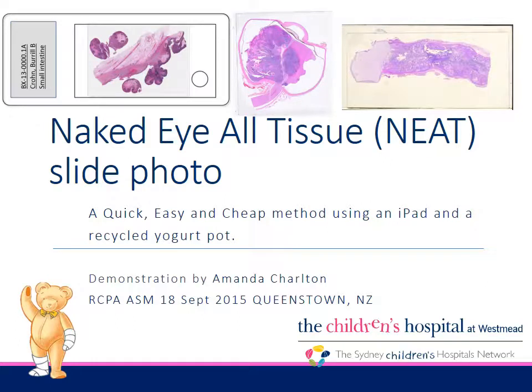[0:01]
Naked eye, all tissue, neat slide photo. A quick, easy and cheap method using an iPad and a recycled yogurt pot. Presented by Amanda Charlton at the RCPA ASM on the 18th of September 2015 in Queenstown, New Zealand.
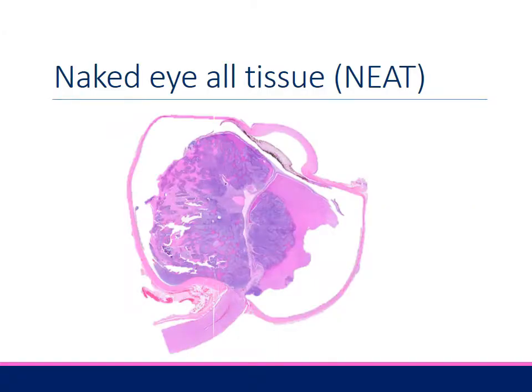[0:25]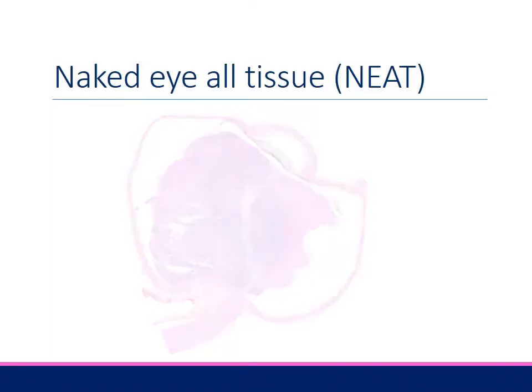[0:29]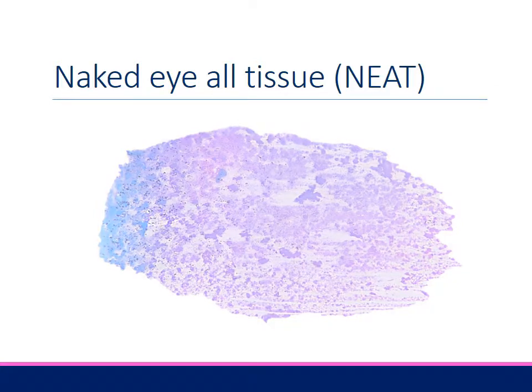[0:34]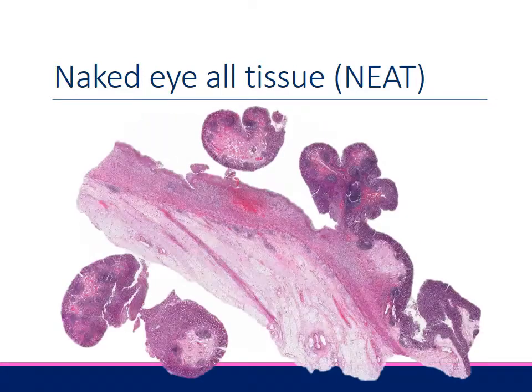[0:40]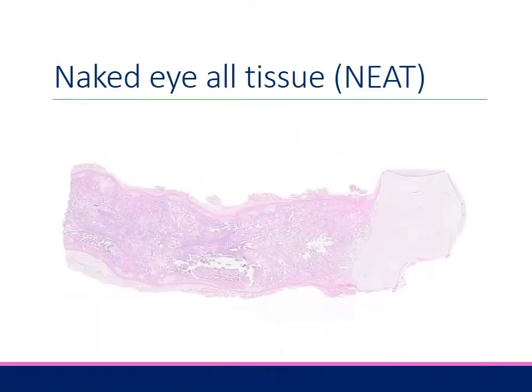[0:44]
The naked eye all-tissue image visually links the macroscopic specimen photo and the microscopic histology. We all know the naked eye image contains information about cell density, architecture, margins, and orientation. The missing link is how to capture this naked eye image.
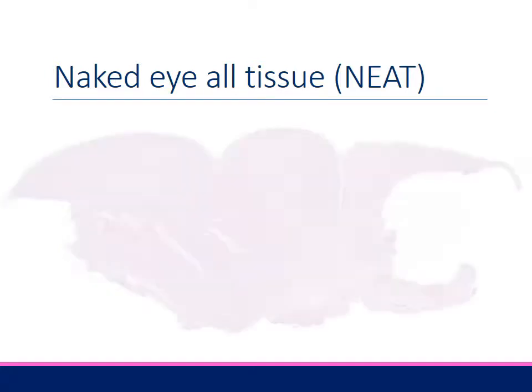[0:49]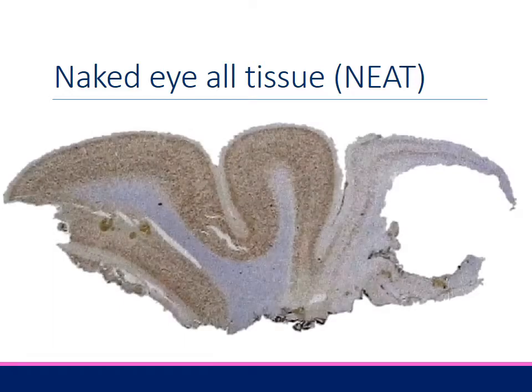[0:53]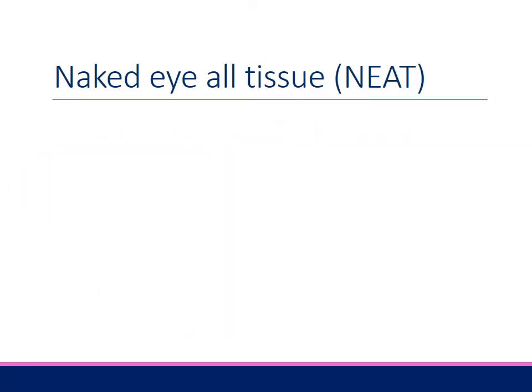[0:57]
The field of view on a microscope-mounted camera is not wide enough. The trick to get the wide field to capture all of the tissue on the slide is to use a regular compact digital camera with backlighting. Let's get started.
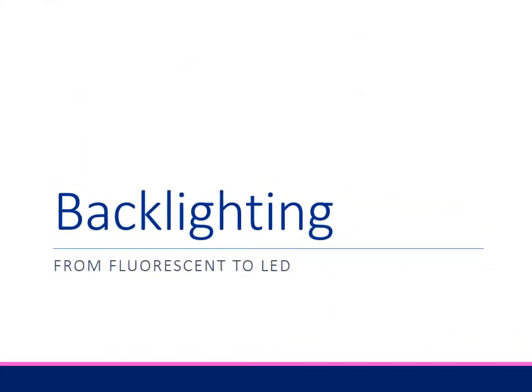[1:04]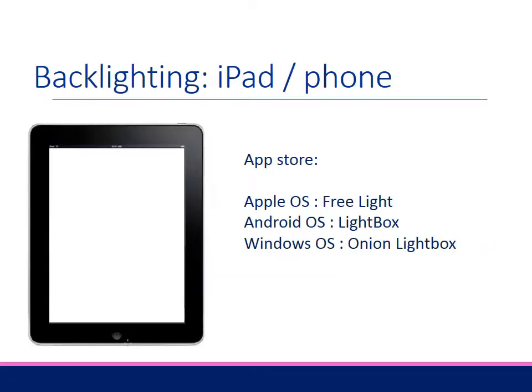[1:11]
We harness the power of modern LED screens. You already have a light box in your pocket or bag. It is your phone or iPad or tablet. Use an app to make the screen a continuous bright white light. I've put links to these apps on a wiki page. The web address is at the end of the presentation and in the URLs in the window below this video to share with you.
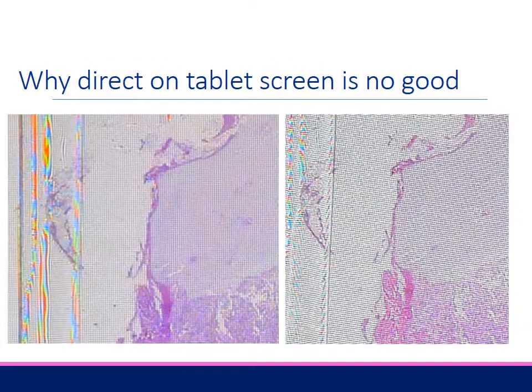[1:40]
You will be thinking, why don't I put the slide directly on the tablet screen? I have tried this and the results are not good, because the tissue is virtually in the same plane as the pixels that make up the screen. The photograph now includes the actual pixel grid that make up the tablet screen. There are two problems with photographing the pixel grid. The most obvious is the grid, which looks like a fly screen mesh or stretched out pantyhose under the slide.
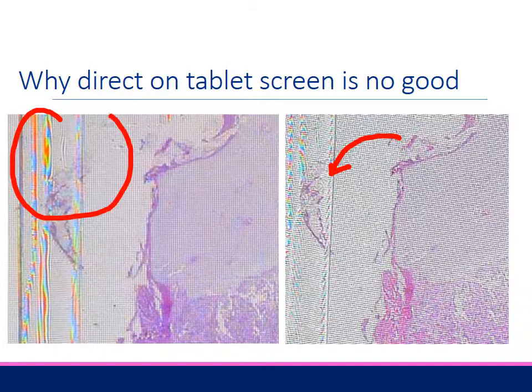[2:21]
On the right, I've rotated the slide on the screen so the grid is diagonal. The second problem is Moire pattern, a rainbow or zebra effect, seen here at the interface of the cover slip. Moire pattern is a visual effect created when two nearly identical patterns are overlaid. In this case, the pixel grid and the linear elements of the cover slip. Avoidance of the moire effect is why TV presenters don't wear houndstooth jackets on screen.
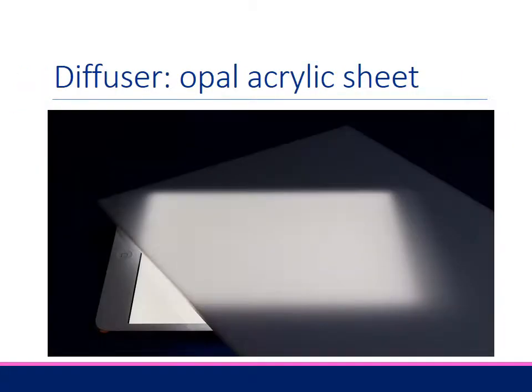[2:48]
The solution is a diffuser to obscure the pixel grid. I've tried different diffusers such as tracing paper, white photocopy paper, but I've found paper has fibers which are also captured in the photo, so paper is no good. The solution is taken from the original light boxes. They all have a diffuser panel between the light source and the subject.
You could recycle the plastic diffuser panel from the front of an old X-ray viewing box. The technical name for this X-ray viewing box diffuser panel is acrylic sheet in opal color. You can buy these cut to size online on eBay and from plastic suppliers. I got a pack of 5 A4 sized opal sheets for $20 delivered. This is a nice firm surface to place your slide on.
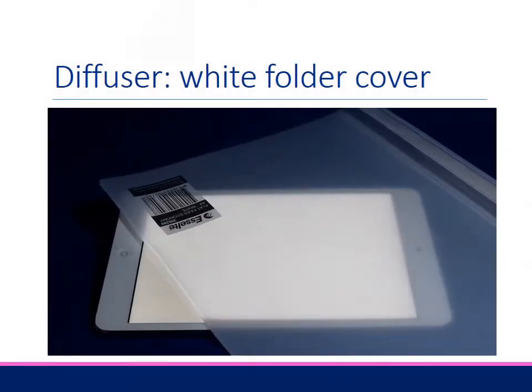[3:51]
Even cheaper and easier is a semi-translucent white plastic or polypropylene file cover, costing less than $1 from Officeworks. Two conditions have to be met in order for this to work. Firstly, it has to be white, not clear, in order to diffuse the pixel grid. Secondly, it has to have a very smooth surface because any bumpy texture will also be captured in the photograph. In an emergency, a white plastic kitchen tidy shopping bag or supermarket shopping bag could do, but they tend to be quite wrinkly and the wrinkles will be captured in your photograph.
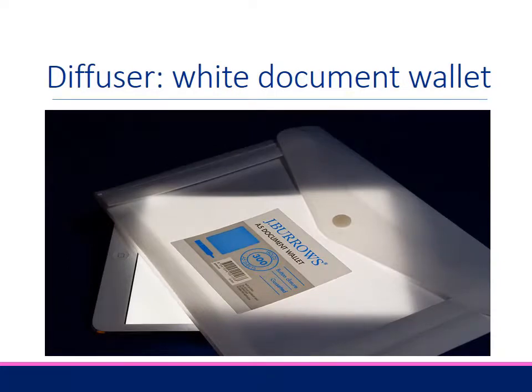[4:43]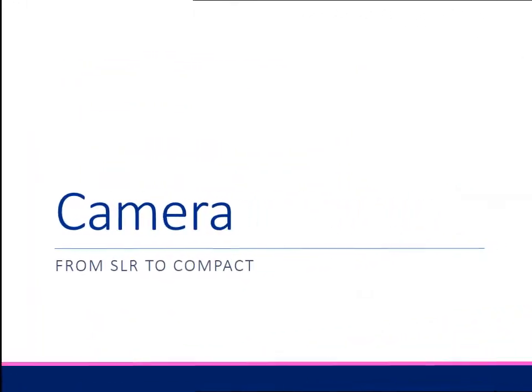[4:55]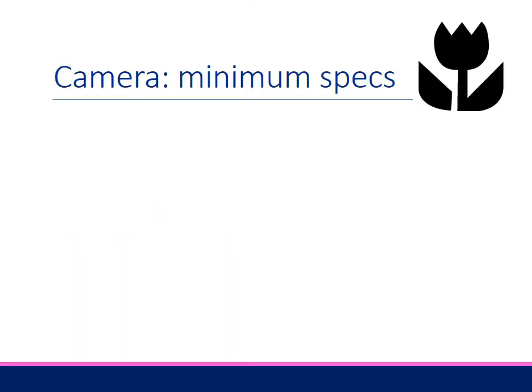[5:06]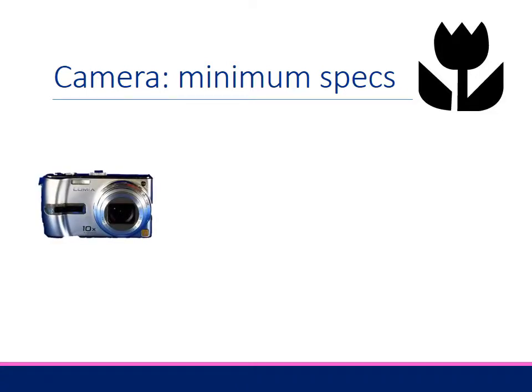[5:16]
Plastic document wallets tend to be made of stiffer material. They work well too, and you can cut the plastic to neatly fit your light box. You don't need an expensive SLR camera. The idea is to use what you already have, and most people have some sort of compact camera. Any compact digital camera with macro mode and a minimum focus distance of about 5 cm or less will do.
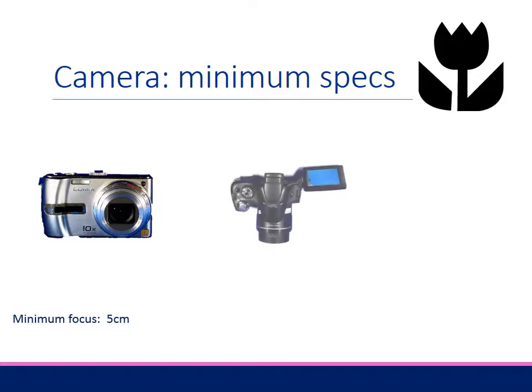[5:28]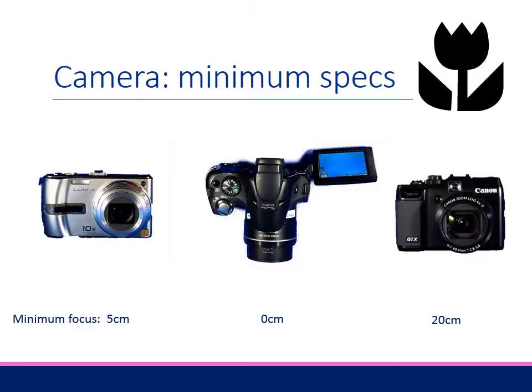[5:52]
This is an old point-and-shoot Panasonic Lumix I found in my gadget junk drawer. It's about 8 years old. On macro mode, the minimum focus distance is 5 cm. Perfect. This is a super zoom fixed lens Canon SX30 from 2010. The macro minimum focus distance is 0 cm. Perfect. On the right is a micro 4/3 fixed lens Canon G1X from 2012, but the minimum focus distance is 20 cm. This is not suitable for the method I will demonstrate.
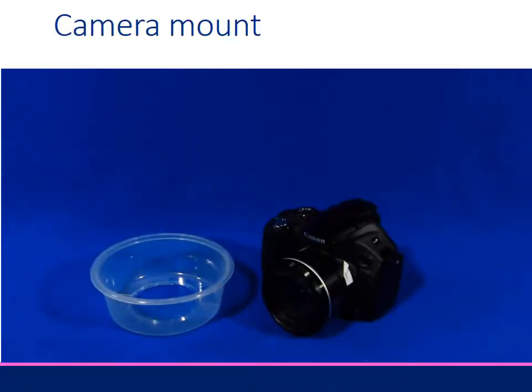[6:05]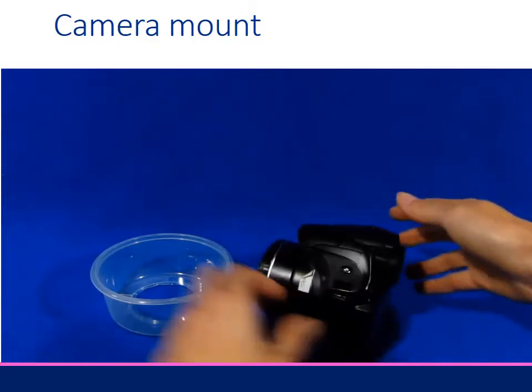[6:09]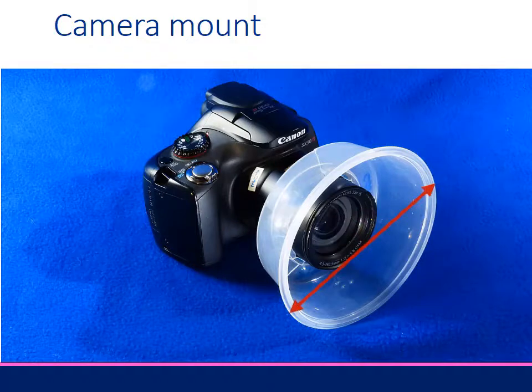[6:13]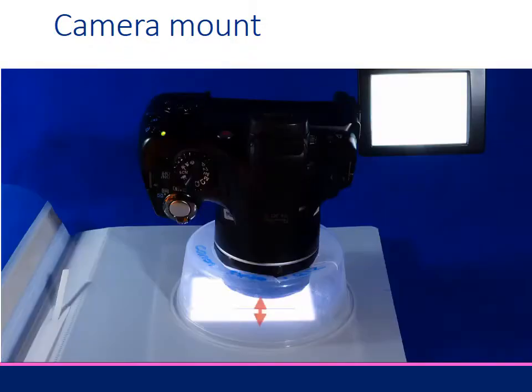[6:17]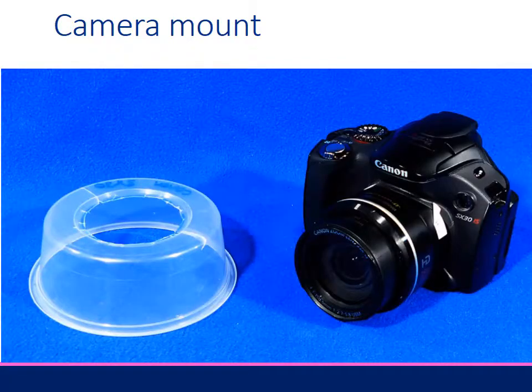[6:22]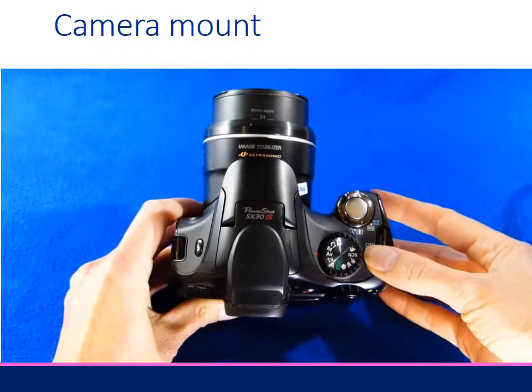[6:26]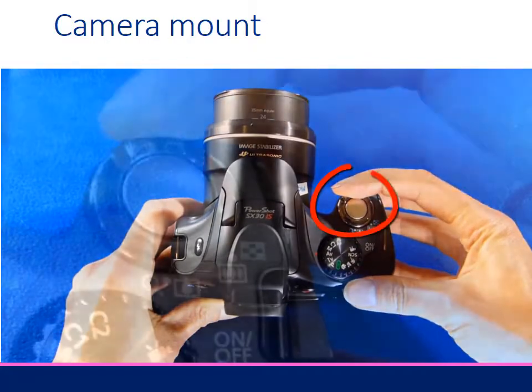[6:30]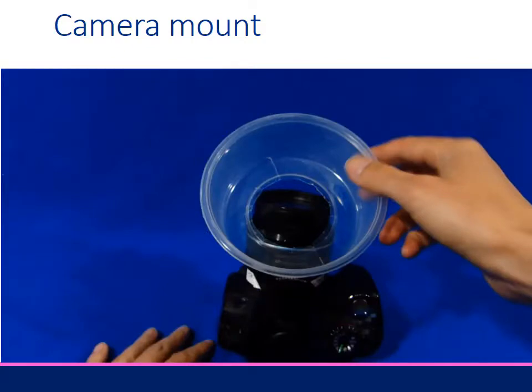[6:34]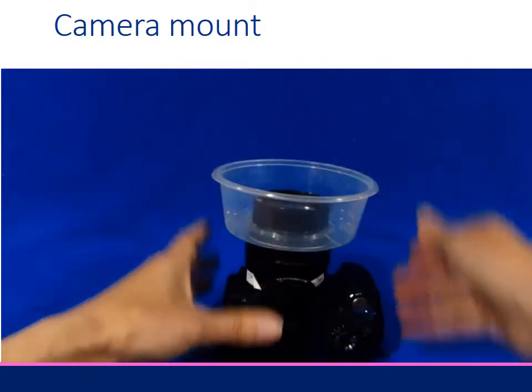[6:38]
So how do we hold the camera stationary but within a few centimeters of the trans-illuminated slide? The camera mount is a plastic food container. I think this one contained olives. The container must be wide enough to support your camera and shallow enough to position the lens at the minimum focus distance from the light box. I've already cut a hole in the base. To get the correct diameter hole, turn the camera so the lens extends and push the zoom toggle to wide or 3 trees. The cut hole in the base should fit snugly when the lens is in the wide position.
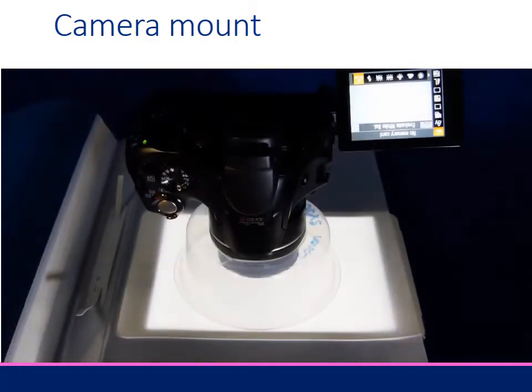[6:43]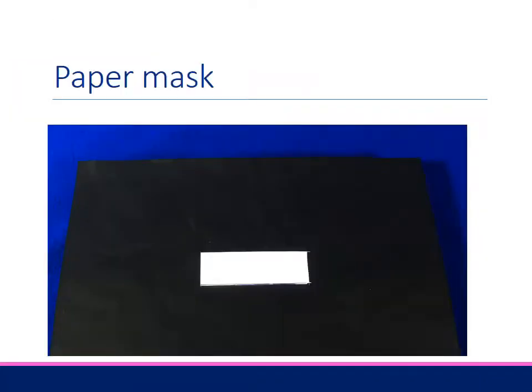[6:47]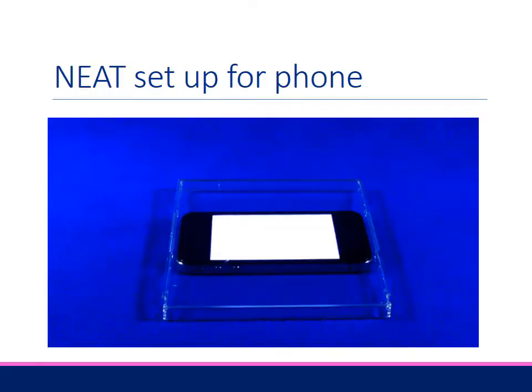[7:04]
The setup is light box, diffuser and mounted camera. I use a black paper or cardboard mask with a rectangular hole the size of a slide to reduce extraneous light entering the camera. I place this on top of the diffuser, which is placed on top of the tablet. If you are using a phone instead of a tablet, the size of the phone surface is too small to balance the broad base of the recycled food container on. To make a stable wide surface, put a hard clear plastic surface such as an old CD cover over the phone before the diffuser and the mask.
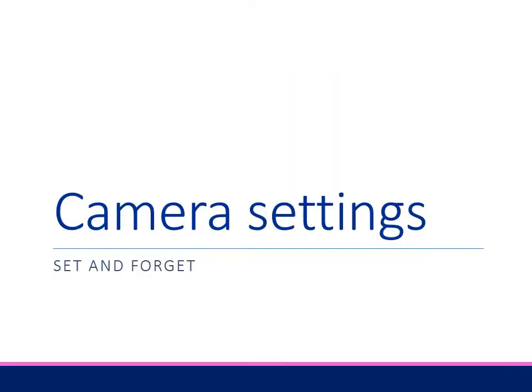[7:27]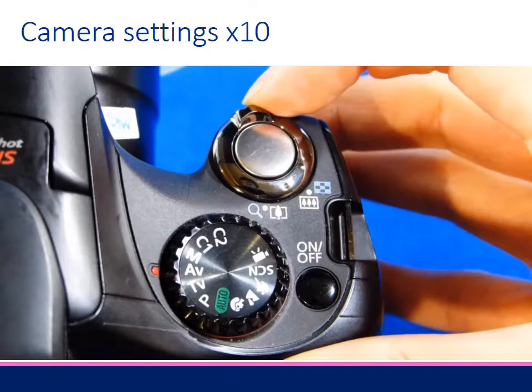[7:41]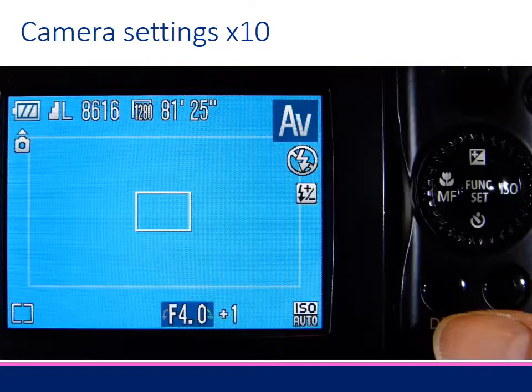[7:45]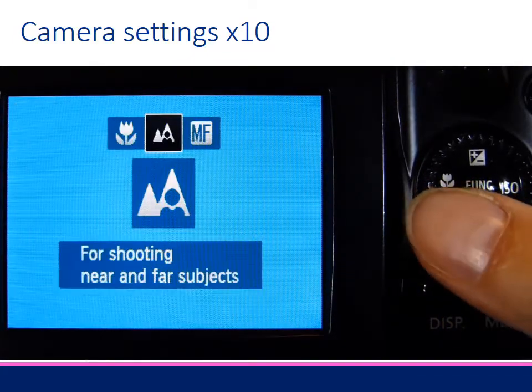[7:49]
There are about 10 camera settings you need in order to get optimal results. The good news is, once you've set up the camera, you don't need to change the settings again. Set the zoom toggle to wide or 3 trees. Select the macro or close-up mode, which is the flower icon.
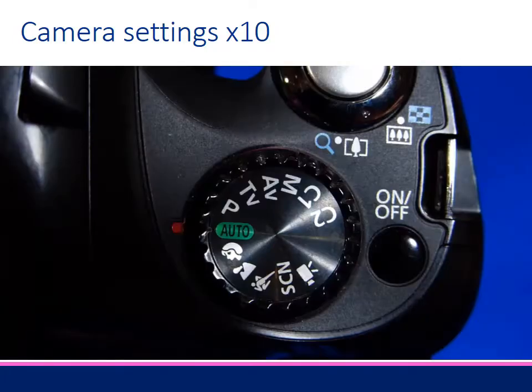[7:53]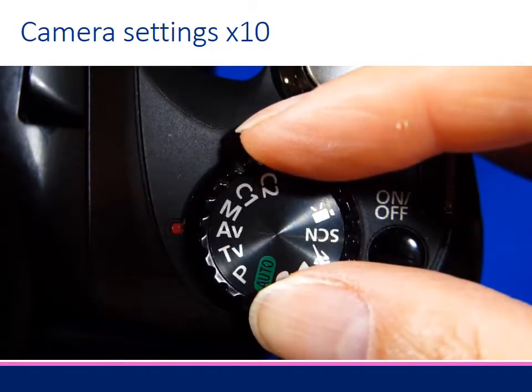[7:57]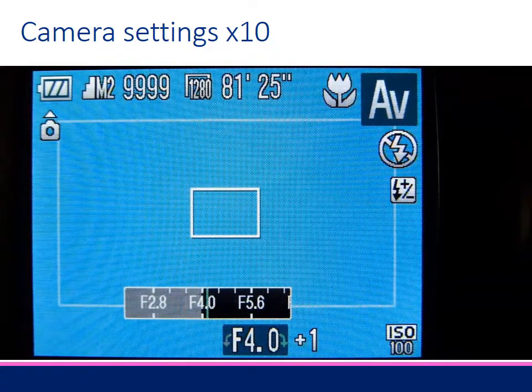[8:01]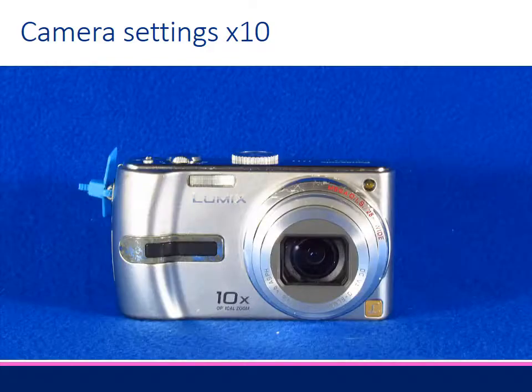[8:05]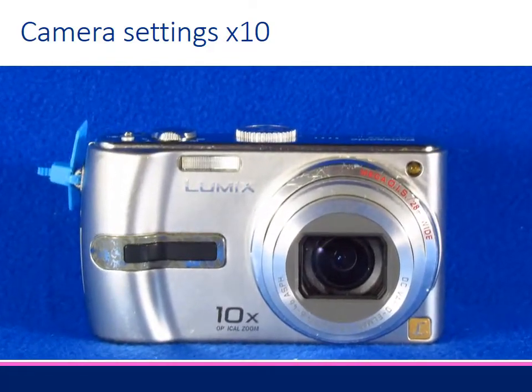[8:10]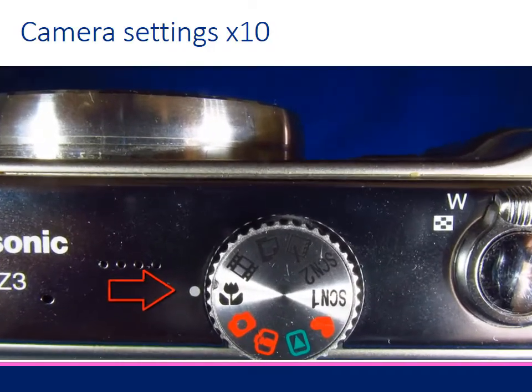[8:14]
Turn the mode dial to aperture priority. Set the lowest number f-stop, in this case 4.0. If your camera does not have aperture priority mode, this method will still work. Just be sure to use the macro mode.
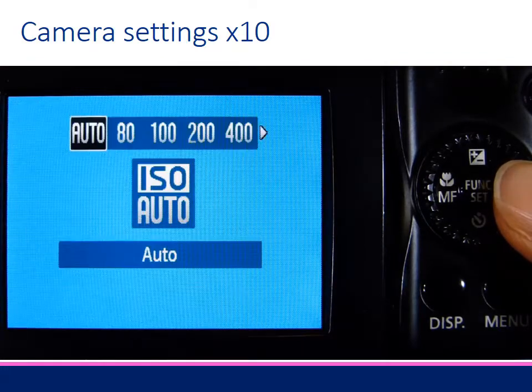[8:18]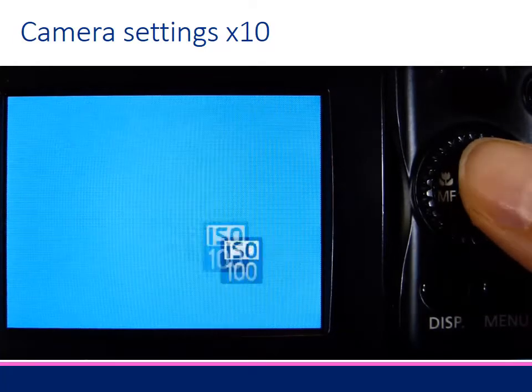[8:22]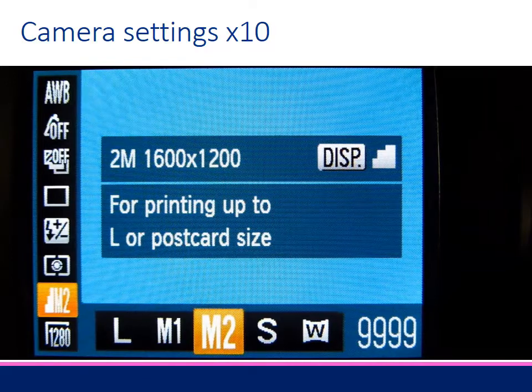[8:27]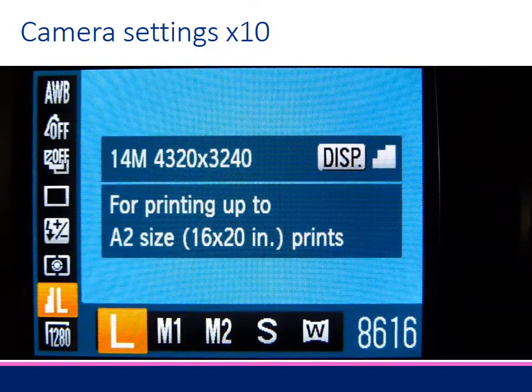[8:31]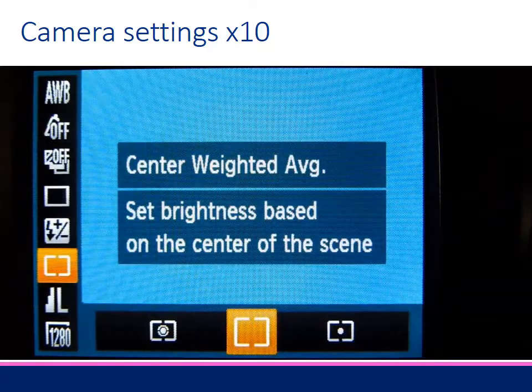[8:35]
Change the ISO from auto to 100. Select the largest image size, in this case more than 4000 pixels wide. For exposure metering, select Center Weighted Average.
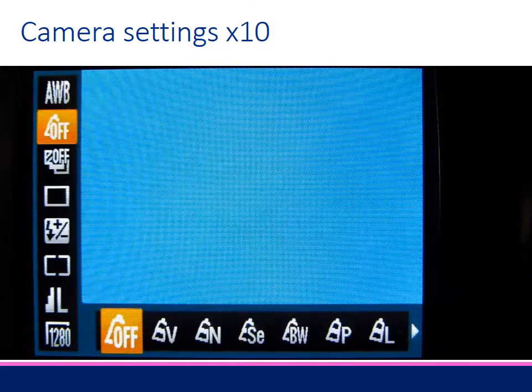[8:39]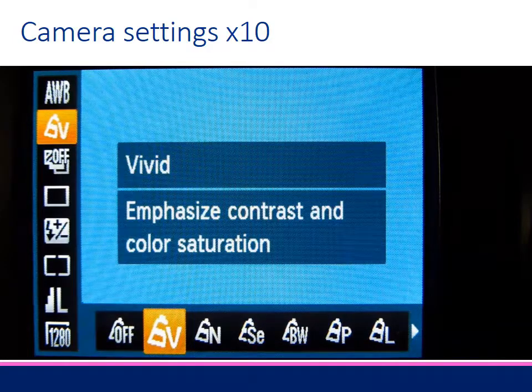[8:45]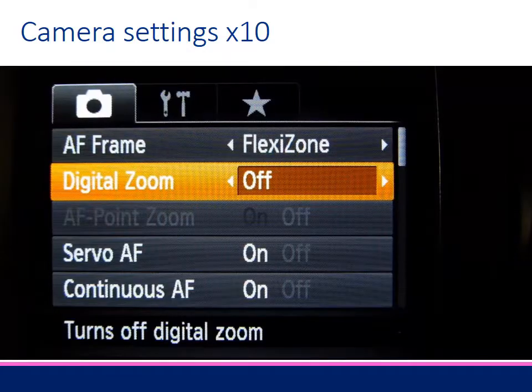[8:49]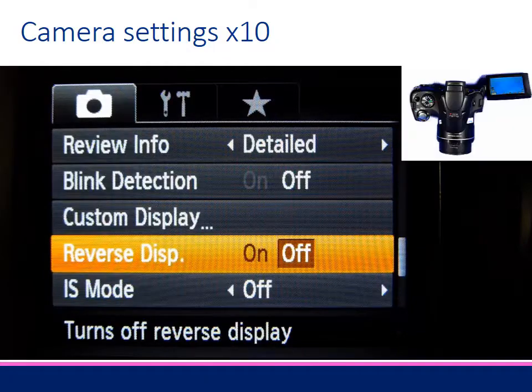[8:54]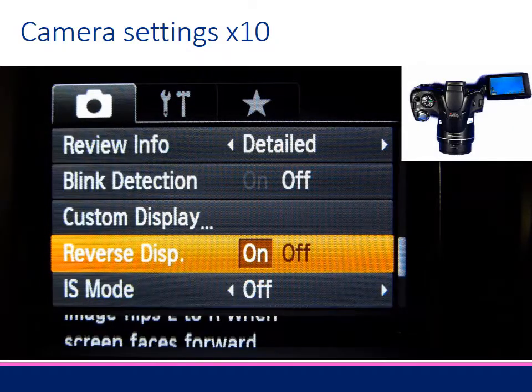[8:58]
Adjust the colors in the Canon menu under My Colors. Choose Vivid. The increased contrast and saturation look good on screen. In the Shooting menu, turn the digital zoom off. For cameras with a flip-out screen, turn the reverse display on.
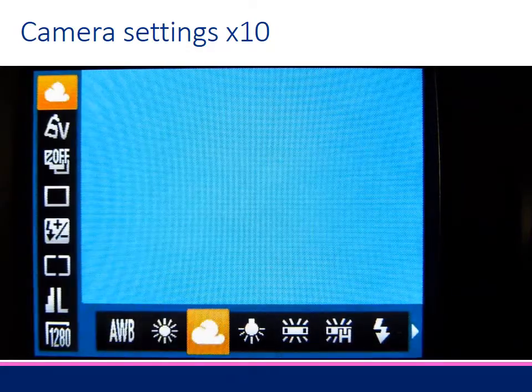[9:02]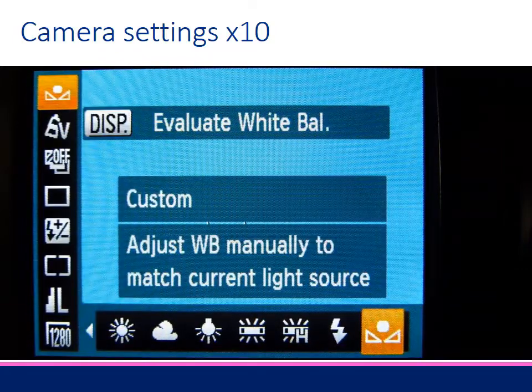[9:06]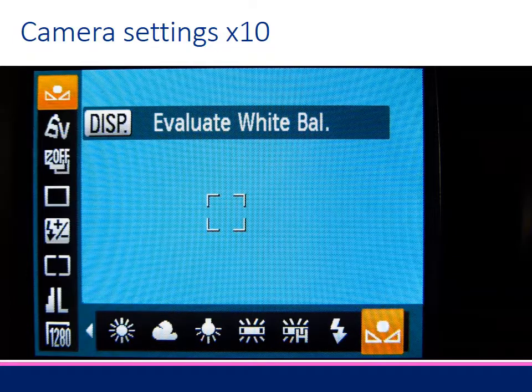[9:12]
We need to change the white balance from auto white balance to custom white balance. Scroll past all of the lighting source options until you come to custom white balance. The icon is usually the last option.
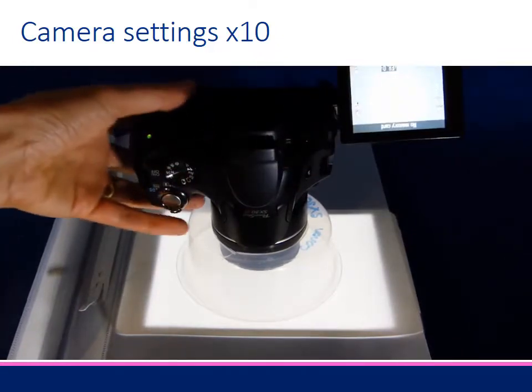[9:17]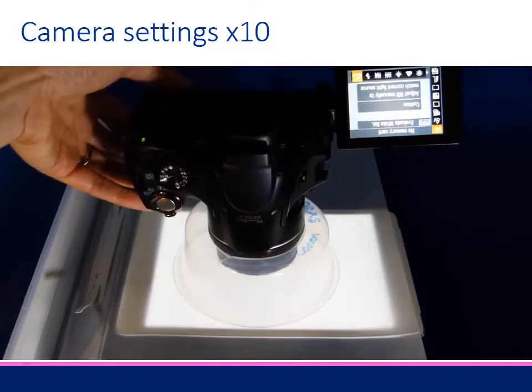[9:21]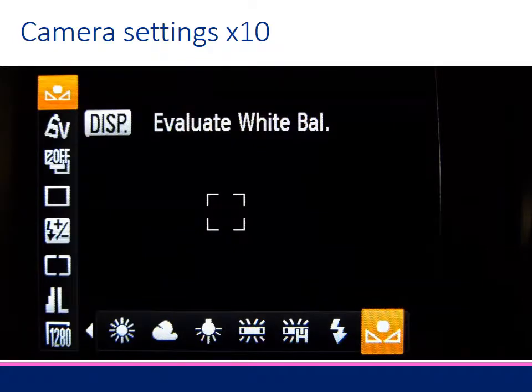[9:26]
Set up the camera on top of the light box on top of the diffuser. Tell the camera to evaluate the white balance, in this case by pressing the display button. See how the color changes from an orange cast to white.
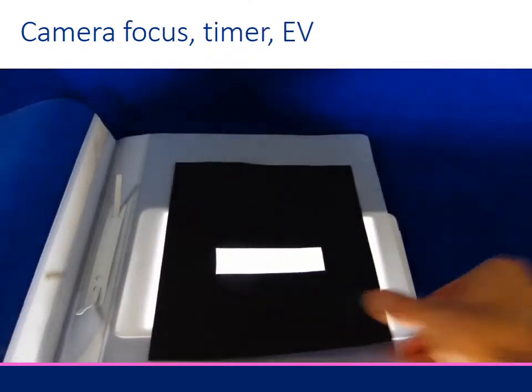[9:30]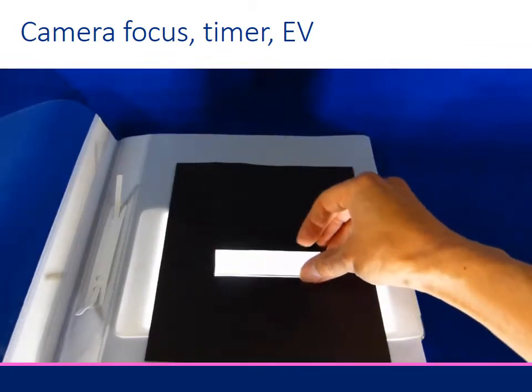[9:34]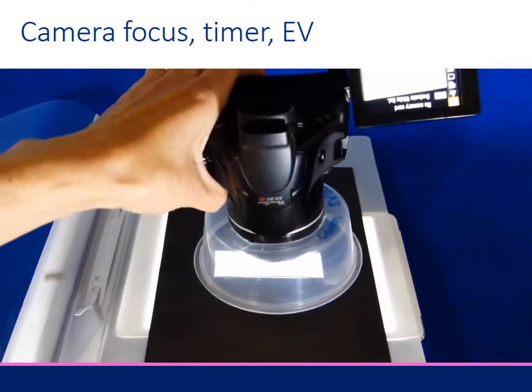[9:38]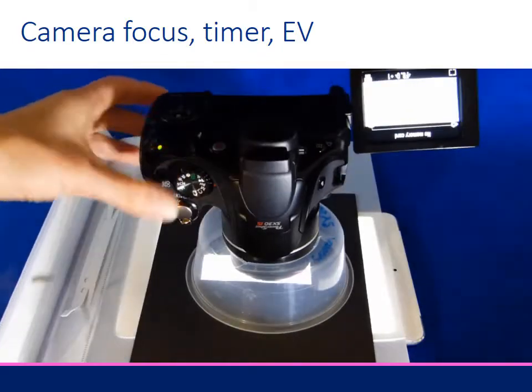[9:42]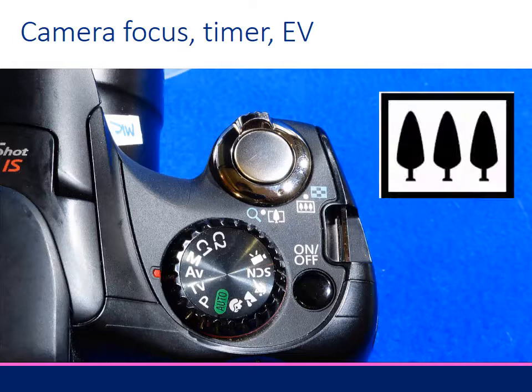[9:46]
With the custom white balance set, place a mask over the diffuser, then place the slide into the mask. Place the camera over the slide. Focus on the slide by depressing the shutter button halfway. If the camera won't focus, check the zoom toggle is wide or 3 trees.
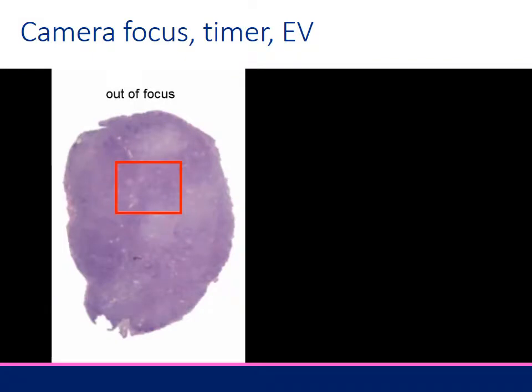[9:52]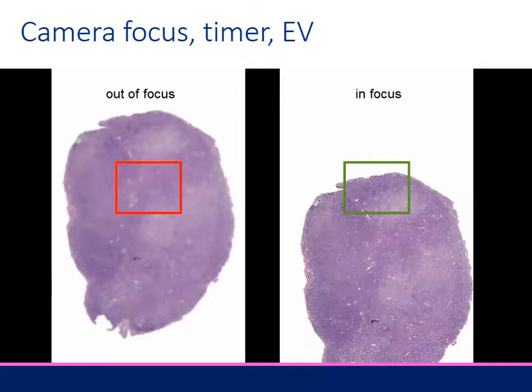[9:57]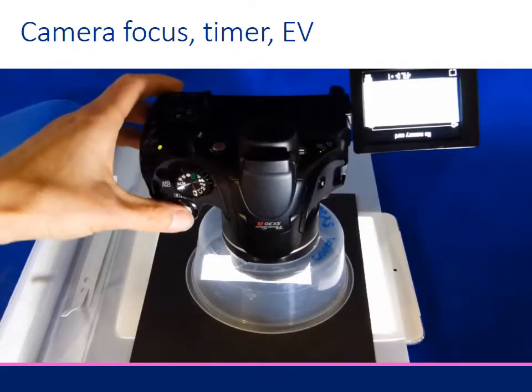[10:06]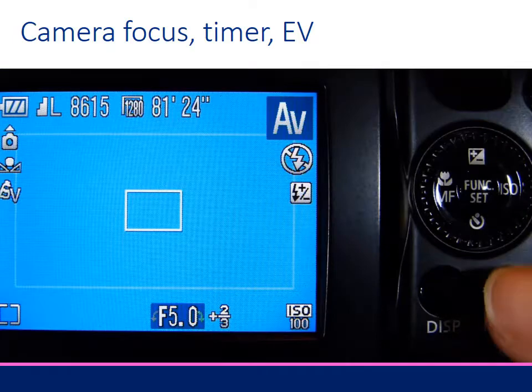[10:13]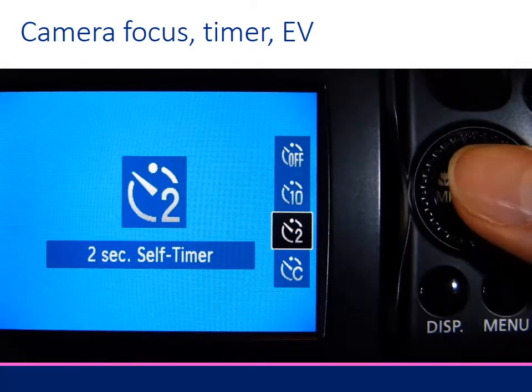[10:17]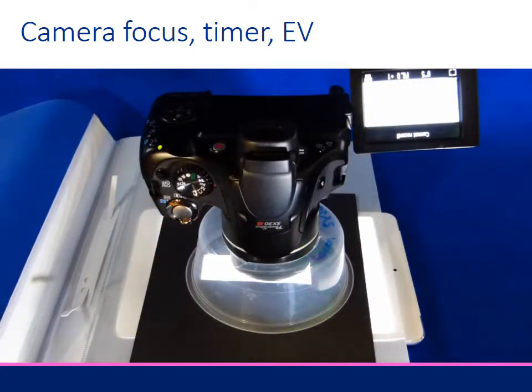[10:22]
Camera focusing algorithms need to see an edge in order to focus, so you may need to move the camera with respect to the slide to get the edge of the tissue in the focus square. Pressing the shutter button with your finger on the camera will result in camera shake and your image will be blurry. The solution is to set the 2-second self-timer, then press the shutter button and take your hand away from the camera. The camera will then be absolutely still when the image is captured.
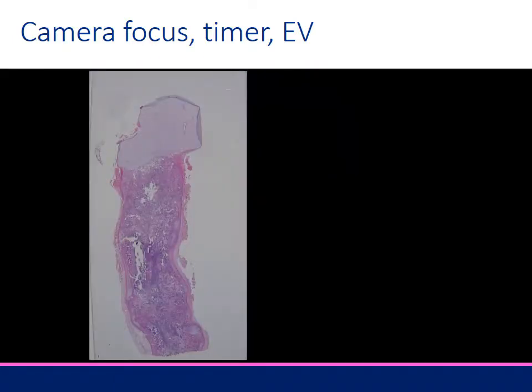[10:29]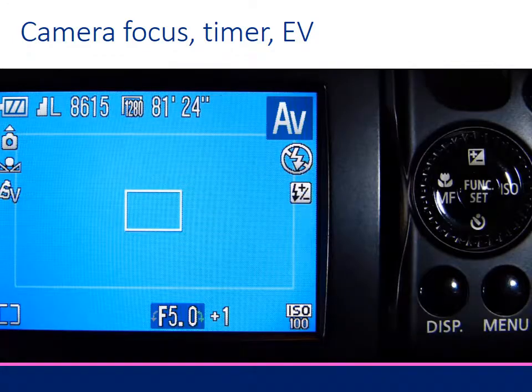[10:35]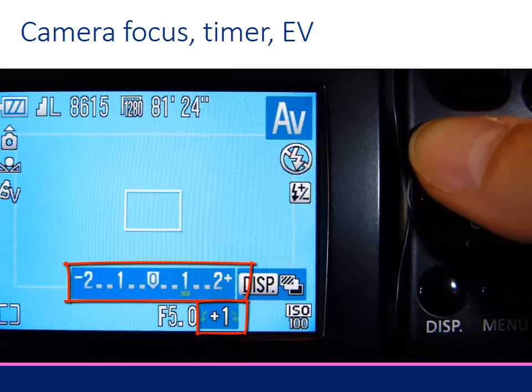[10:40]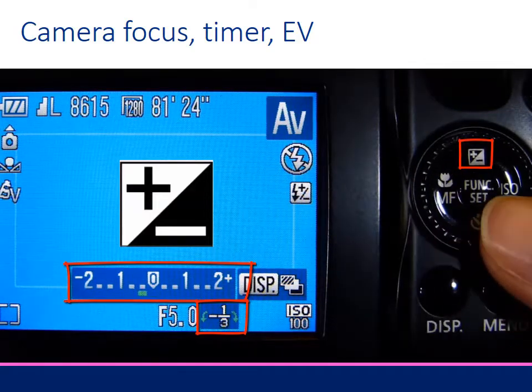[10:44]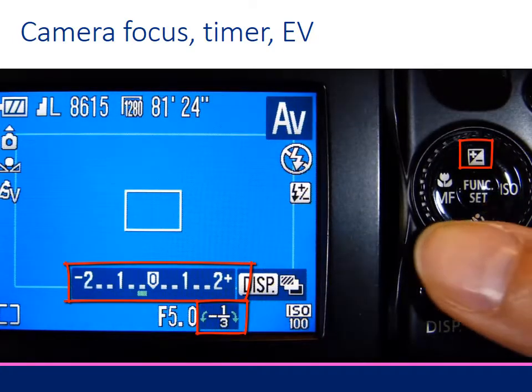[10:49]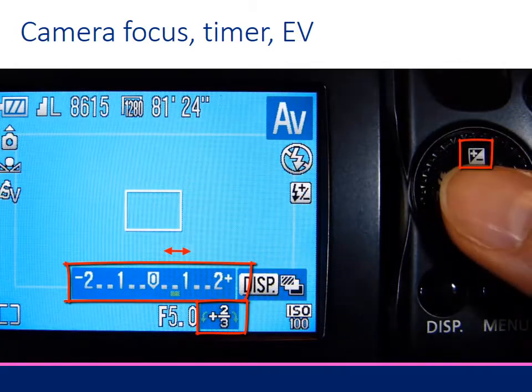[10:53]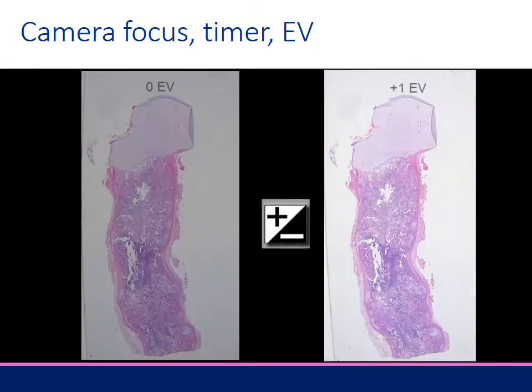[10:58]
Evaluate the photo. If it appears to be grey or dull, it means the photo is underexposed. The solution to increase the brightness is to use exposure compensation. This is the plus-minus icon, and the value is measured in increments of 1/3 of an exposure stop. I have found between +1/3 and +1 gives a whiter background without losing colour information.
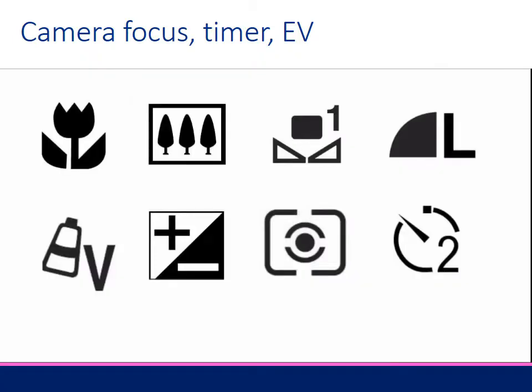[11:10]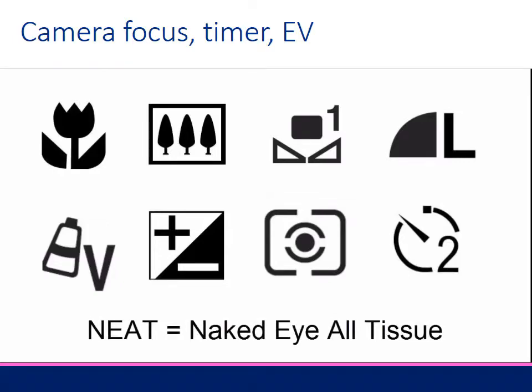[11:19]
Every camera will be different. However, once you find the correct exposure value compensation, this will remain the same for the same camera. Once the camera settings are set, they don't need to be set again. When you next turn the camera on, it will be ready to take a neat photo with no further adjustments.
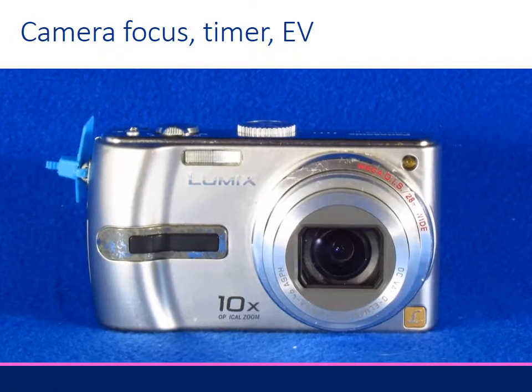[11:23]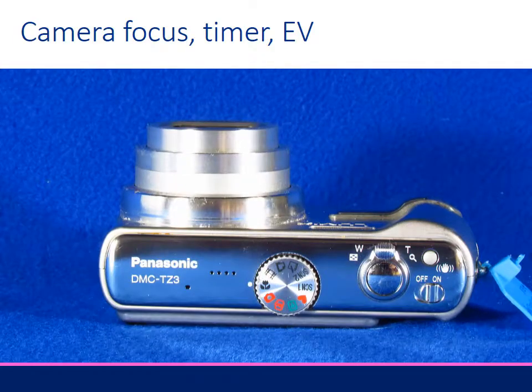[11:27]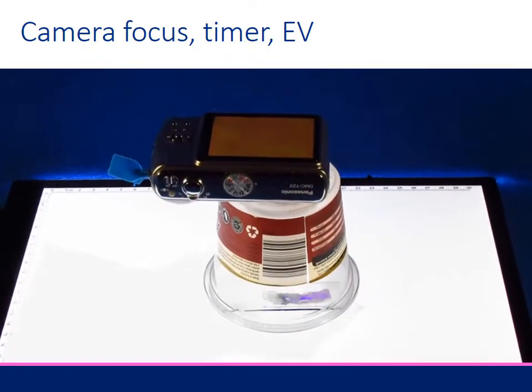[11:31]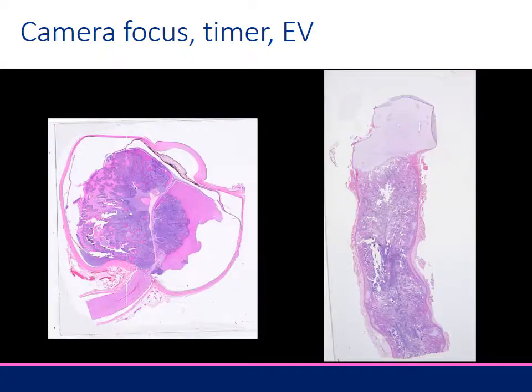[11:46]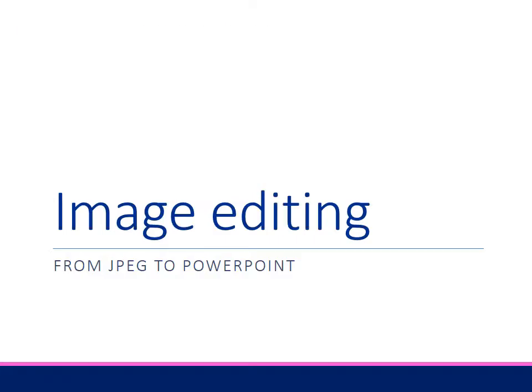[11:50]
For convenience, I have repurposed this 8-year-old compact camera I found in my electronics junk drawer to be my naked all-tissue slide photo camera. The reason this plastic food container is taller is because the minimum focus distance of this camera is 5 cm. The photo quality is perfect for screen viewing, such as in PowerPoint presentations.
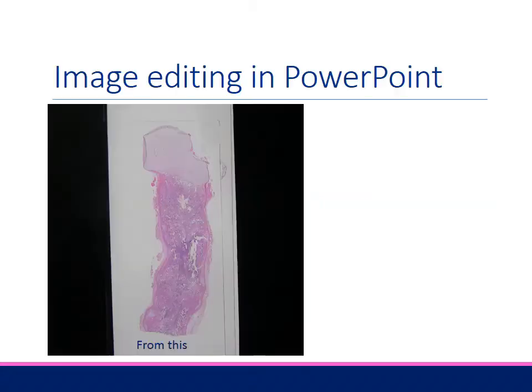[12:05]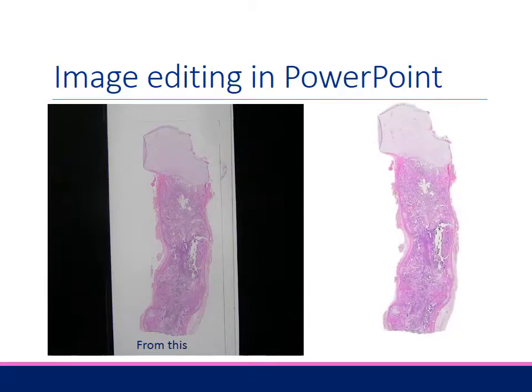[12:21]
You don't need Photoshop, which is expensive and complex, to edit your images. You can quickly and easily optimize your images using PowerPoint, which you already have. The photo imported from the camera card is on the left. It's rather grey, soft, and shows distracting cover slip edges and bubbles. To get the edited image on the right took less than a minute.
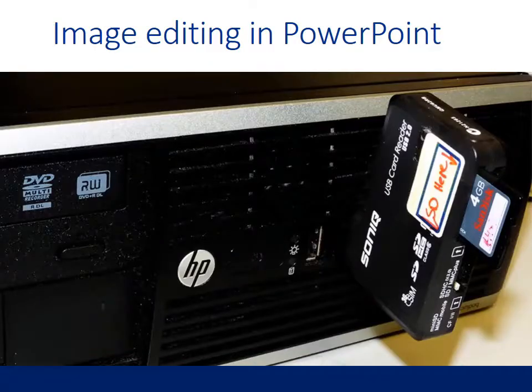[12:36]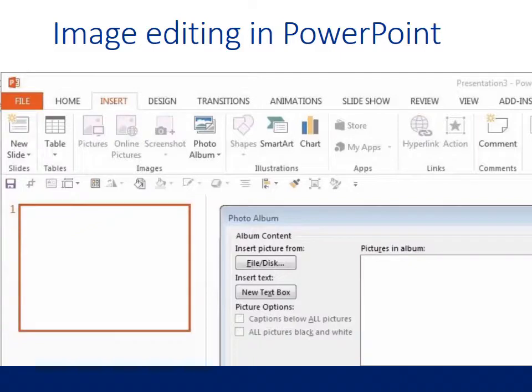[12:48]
I usually batch process more than one naked eye all-tissue photo at a time. The next video shows the steps for image editing in PowerPoint. Take the memory card from the camera and insert into the computer. I'm using an SD to USB reader since my PC does not have an SD card slot. For time efficiency, I usually edit several photos sequentially.
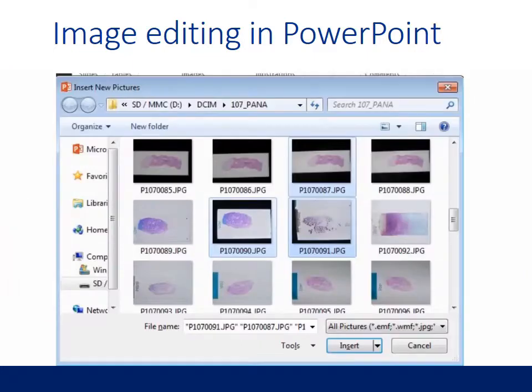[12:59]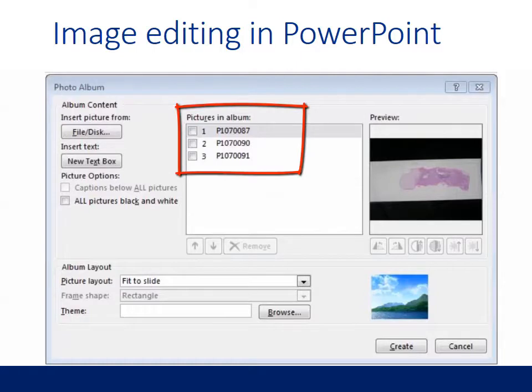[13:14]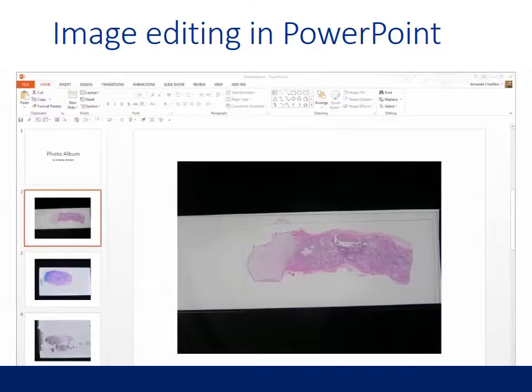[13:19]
In PowerPoint, insert, photo album, new photo album, insert picture from file. Navigate to the camera card and find the image files in the folder called DCIM. To select multiple discontinuous photos, hold down the Control key. Click Insert. The file numbers will appear. Click Create. The photos have automatically been inserted in the correct size into sequential slides.
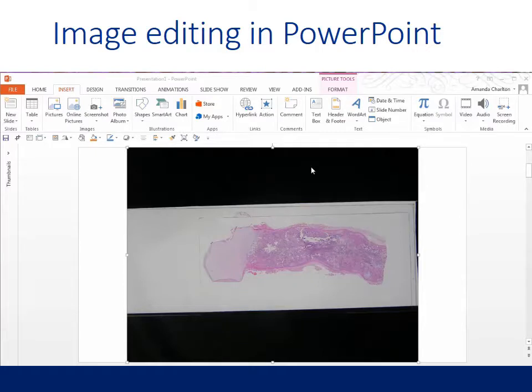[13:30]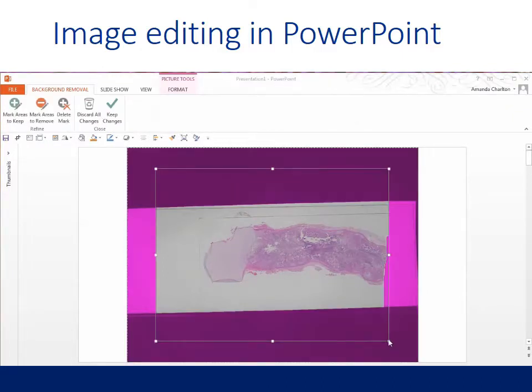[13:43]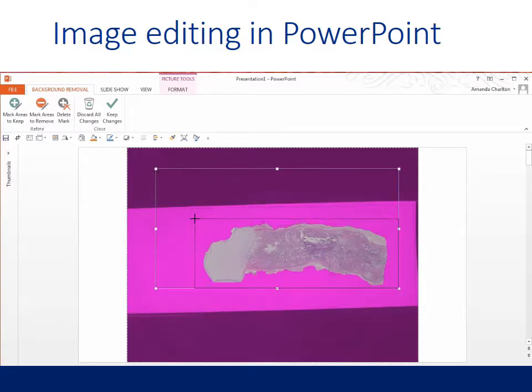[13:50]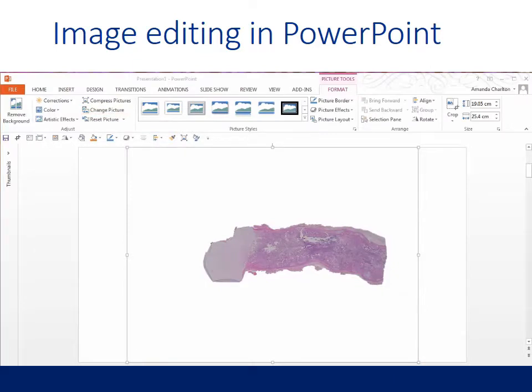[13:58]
Let's work on the bone slide with osteogenesis imperfecta. Click on the photo, which brings up the Format tab and the Picture Tools tab. Click on the Picture Tools tab to bring up the Picture Tools ribbon. Click on Remove Background. Pink represents the area to be removed. Drag the handles close to the tissue. We want to remove the edges of the slide and cover slip. Keep changes. The tissue now has a transparent background.
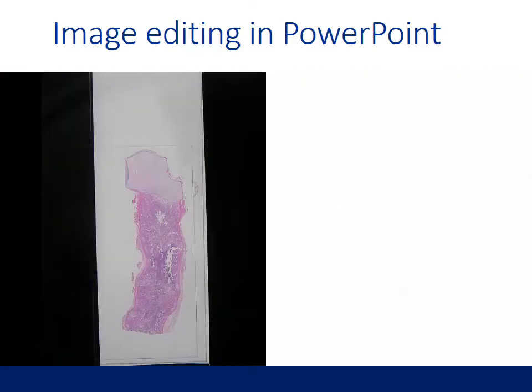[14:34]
Click on the picture, Picture Tools, Corrections, Picture Correction Options to bring up the Format Picture window with sliders. The picture correction options that worked for this image are Sharpness plus 25%, Brightness plus 11%, Contrast plus 35%, Saturation plus 105%, Color Temperature no change. Remember, we did custom white balance at capture. We can move from import of image to final PowerPoint in less than 1 minute.
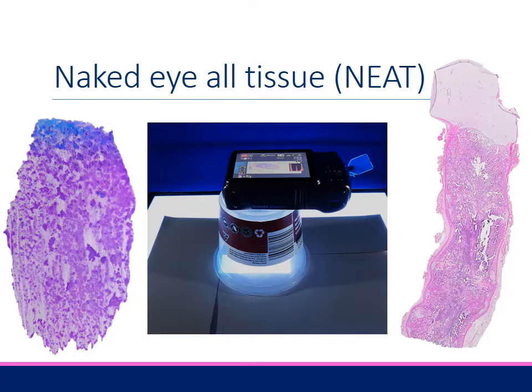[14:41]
Using your iPad or tablet, a compact camera, and a recycled food container, you can capture neat photos in your office, beside the microscope and computer. Scientific and technical staff can be trained to capture and edit these images for you. It's quick, less than 4 minutes from glass slide to PowerPoint slide. It's cheap. You already have a digital camera, a phone or tablet screen, and PowerPoint.
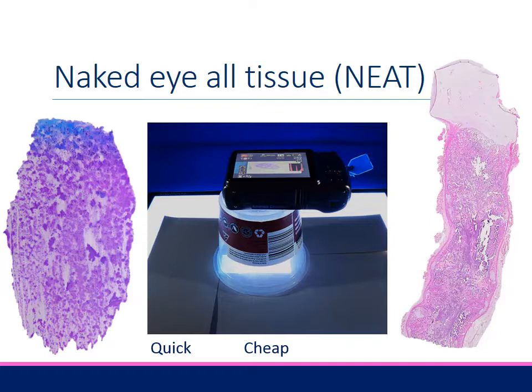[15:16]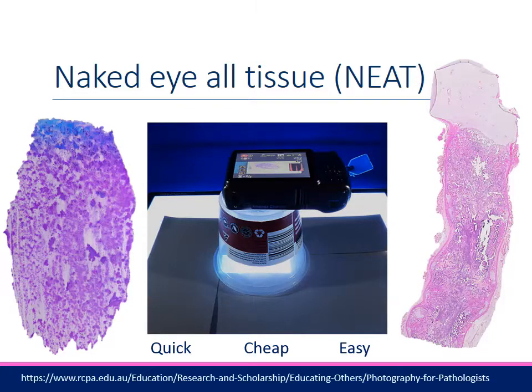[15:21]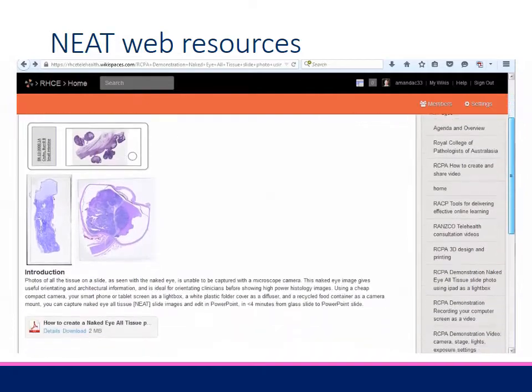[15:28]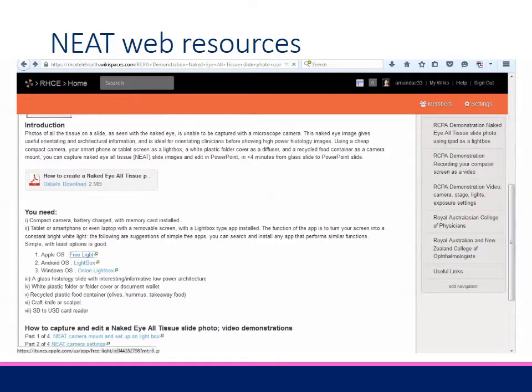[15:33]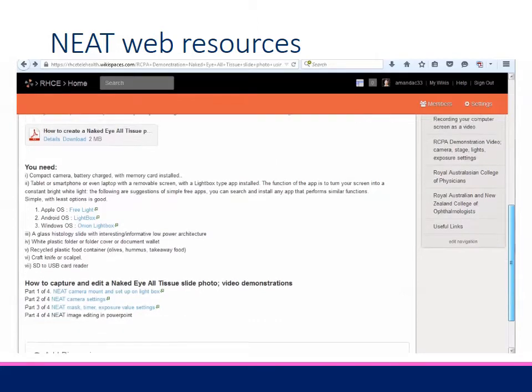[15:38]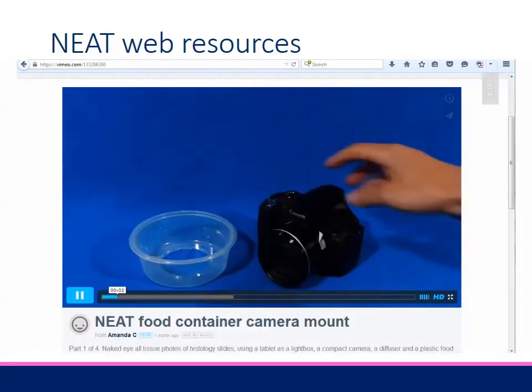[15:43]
It's easy. Follow the instructions on the RCPA website and the Wikispace. A more interactive resource is this open access Wikispace webpage, where you will find the written instructions, links to the Lightbox apps in the Apple and Android app stores, links to the 4 how-to videos shown in this presentation. The Wikispace website address on this label is shown in the details box below this video presentation.
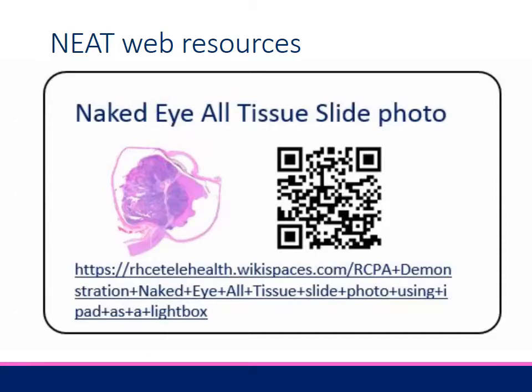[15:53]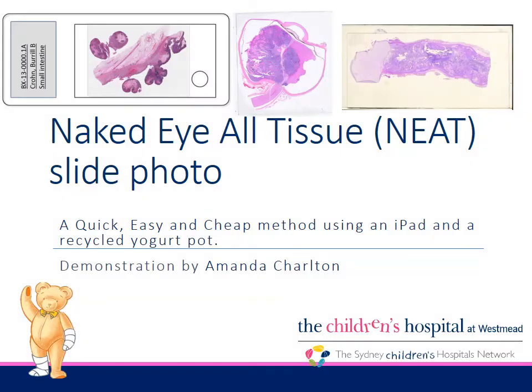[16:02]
Or even quicker and easier, scan the QR code on this screen with your mobile device to go directly to the wiki. I encourage you to have a go. Thank you.